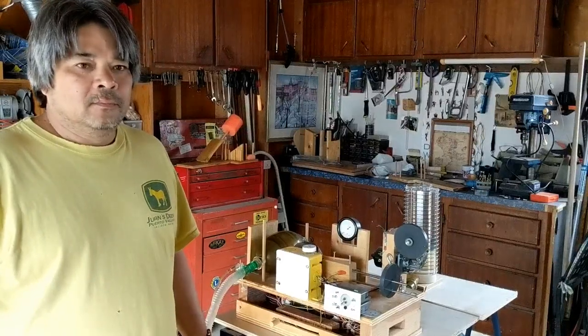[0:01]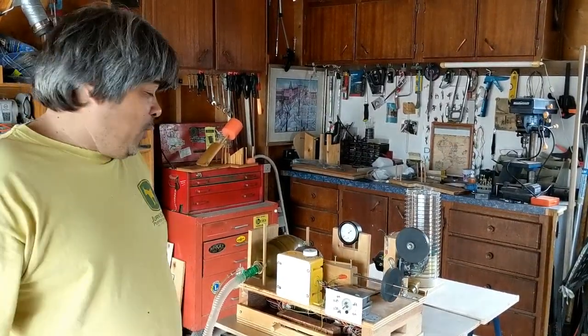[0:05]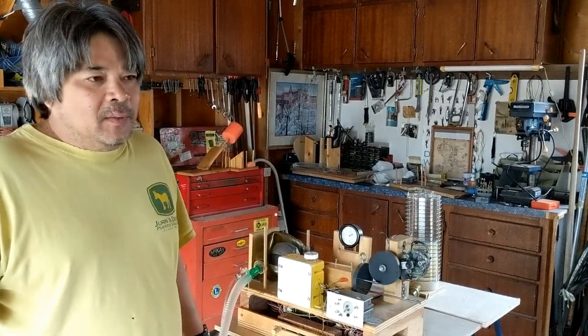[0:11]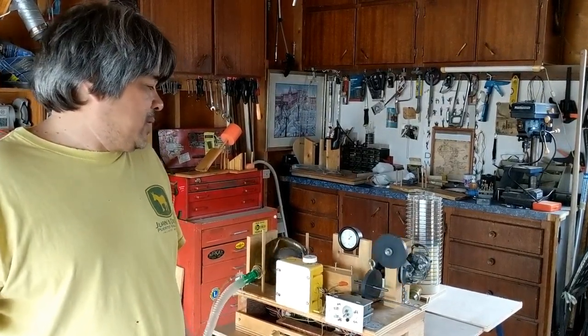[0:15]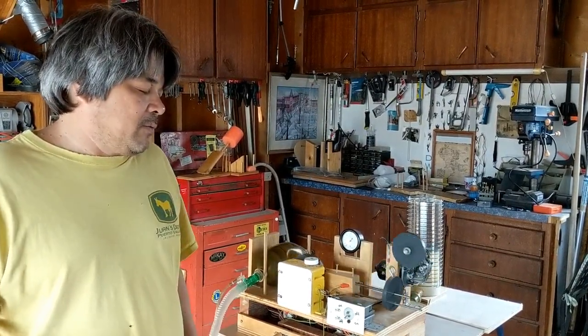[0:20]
So, this is something I built about 20 years ago. I used to be a respiratory therapist, and I had the idea that I wanted to build a cheap ventilator for the third world. So, I developed this. It was designed to be 12 volts. You could run it in a vehicle, or you could run it in a hospital.
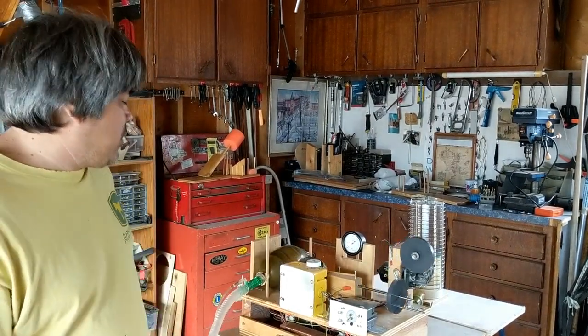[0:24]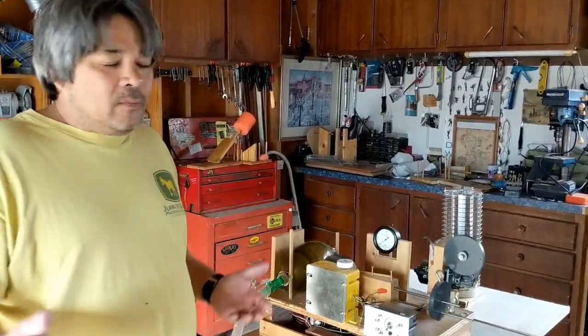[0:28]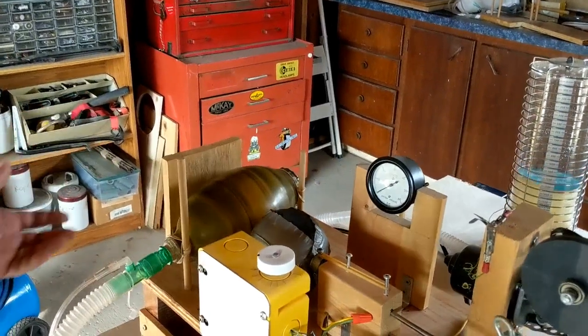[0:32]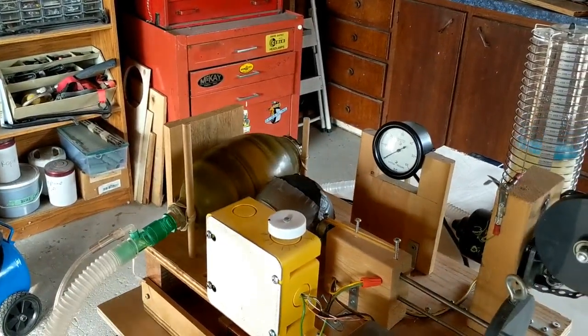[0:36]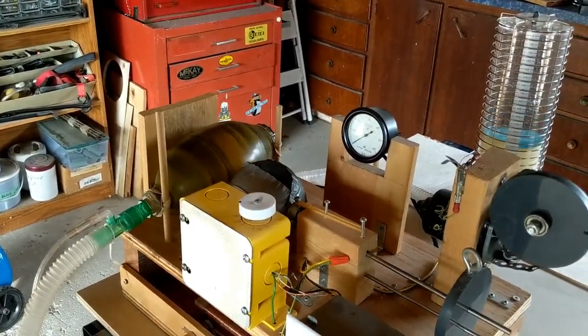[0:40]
It was based on the principle of always having a bagging unit around anyways. Anybody innovative, there's always a bagger around. So I thought, why reinvent the wheel? This has been used for decades and it's proven. So the concept of the bagger is delivering the oxygen in a safe way.
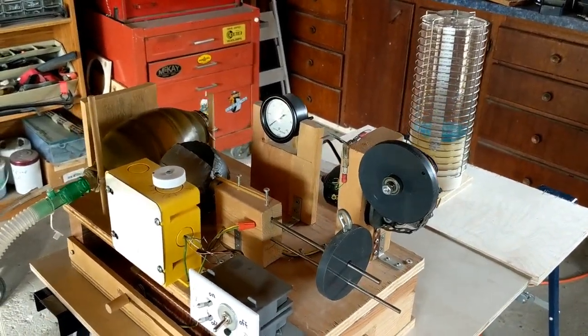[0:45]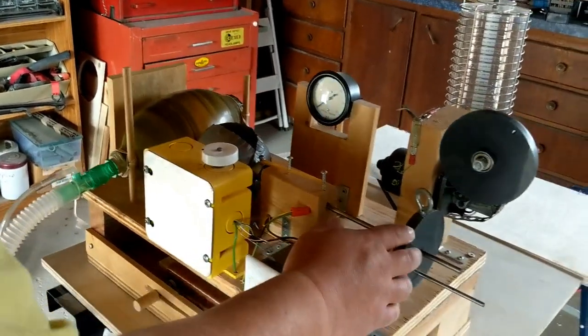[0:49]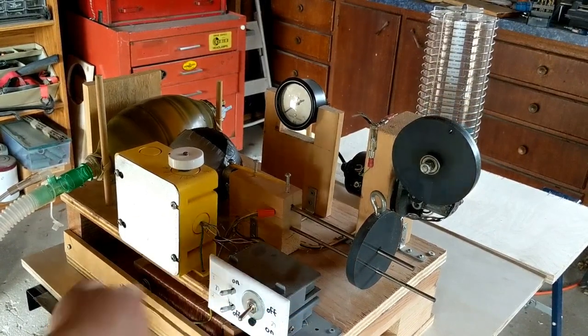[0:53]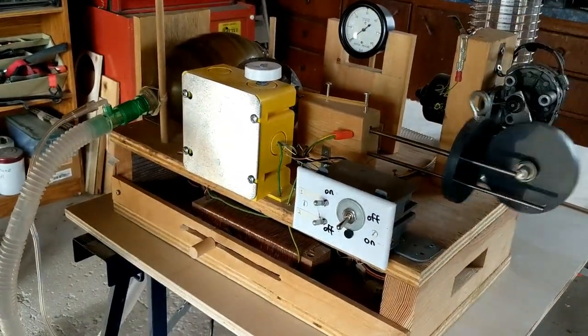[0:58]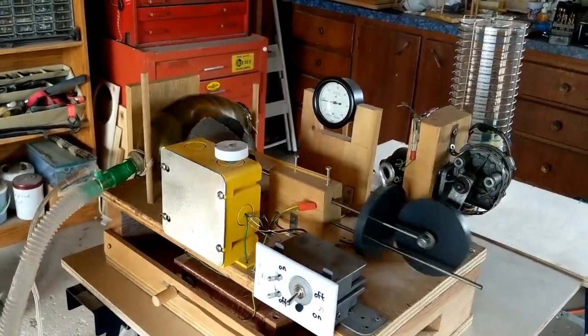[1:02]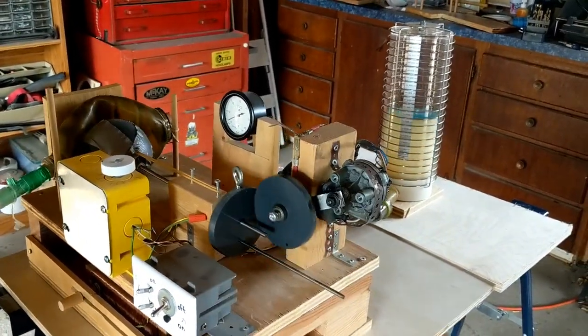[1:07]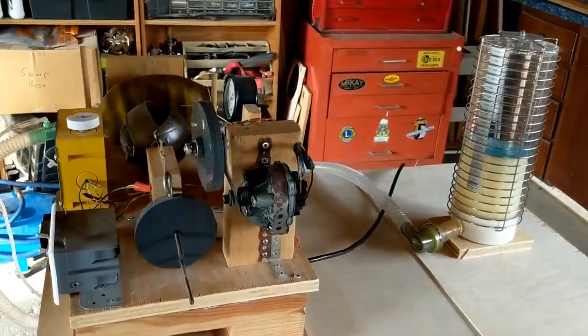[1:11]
I went with that. Now this particular unit uses a 555 timer to control the interval. The tidal volume is controlled by the placement of this disc. And the flow is controlled with this rather primitive rheostat that I had to make. It works okay, but I could never get much more than 650 cc's for a tidal volume out of it. And then my life got busy and I kind of forgot about it. I put it down in the crawl space for 20 years and COVID-19 hit.
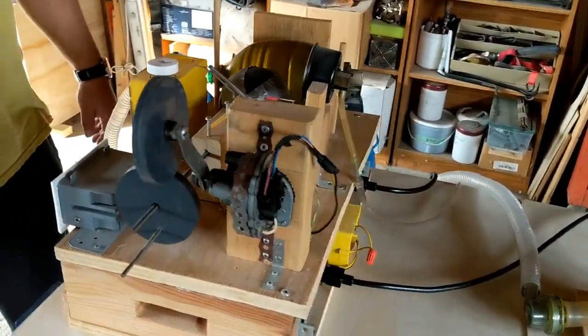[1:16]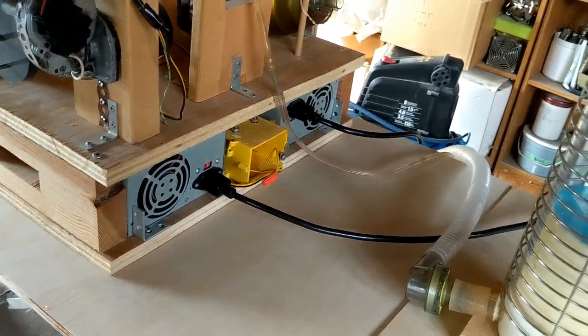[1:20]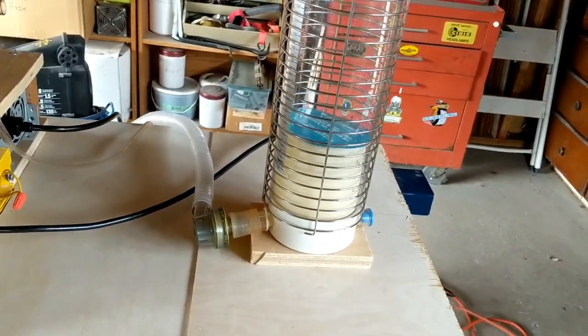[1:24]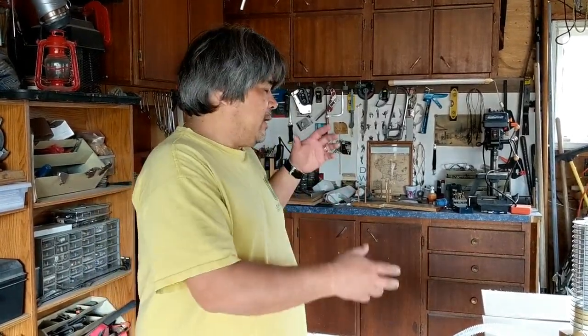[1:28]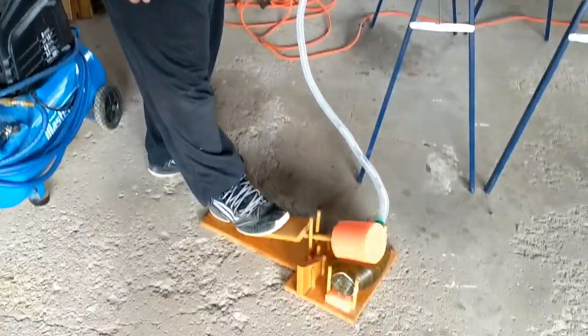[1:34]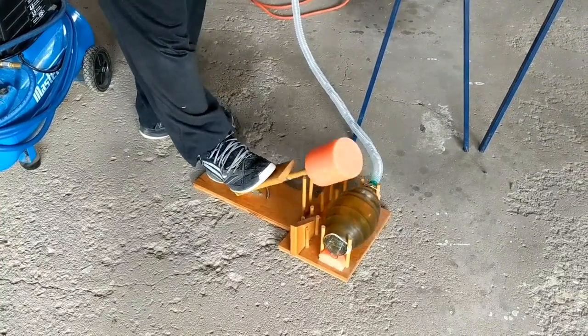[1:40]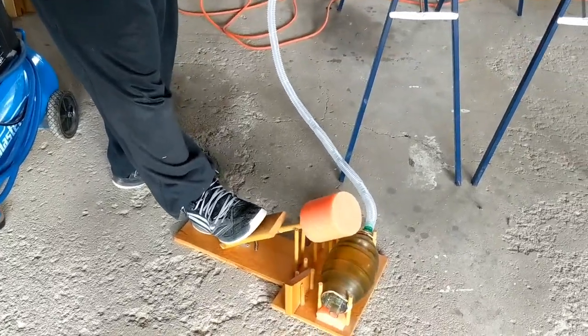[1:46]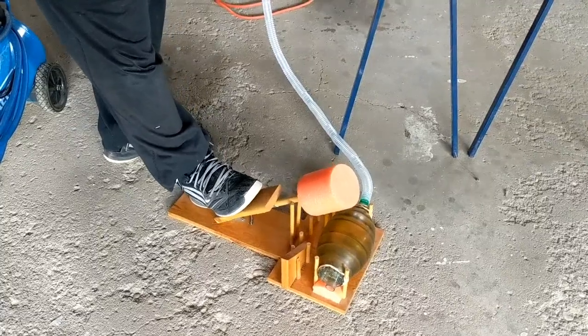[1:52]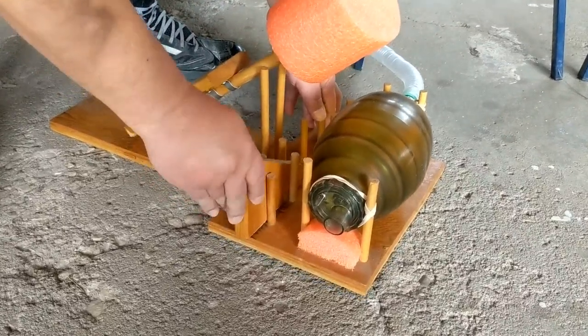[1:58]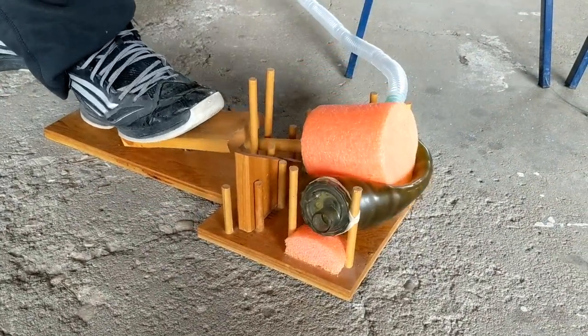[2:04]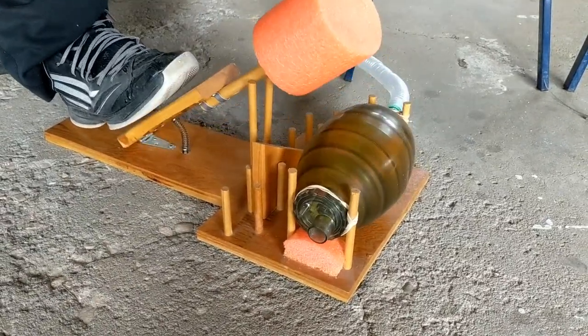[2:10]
In the course of my trying to figure out how to build that, I stumbled across this. Now this was sort of designed to free up your hands and bag a person. I guess meant for ambulances or busy nurses, you know, to change IV fluids, that kind of thing. This might be useful in the present situation because it keeps you away from the head of the bed and you can still bag. With this wedge, you can titrate with a Wright's respirometer the tidal volume you're giving. I've got measurements down there, so you can control the tidal volume while bagging. It's kind of nifty.
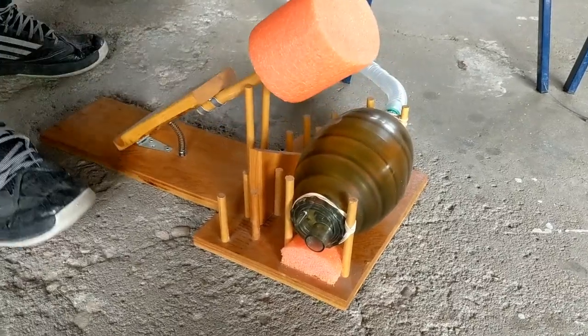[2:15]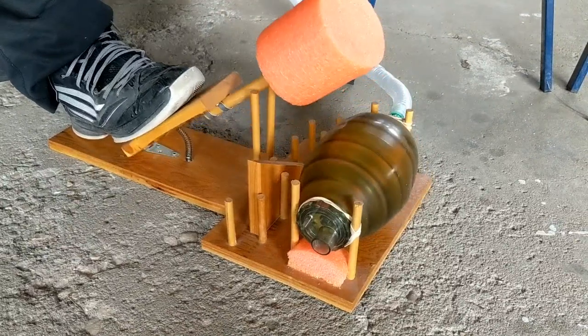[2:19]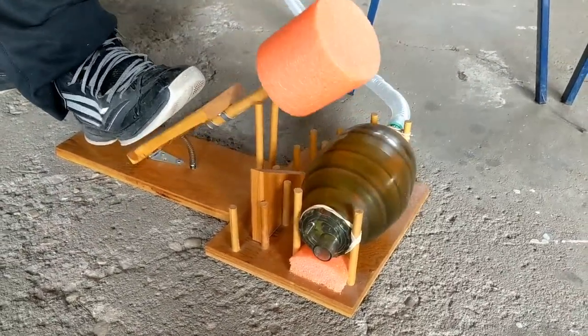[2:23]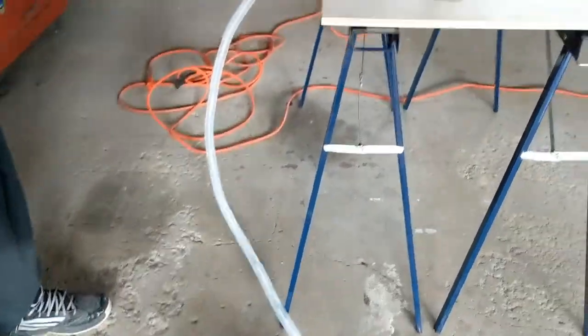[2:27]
Free up your hands. And get about 900 cc's out of this pool noodle head. It's a pool noodle cross section.
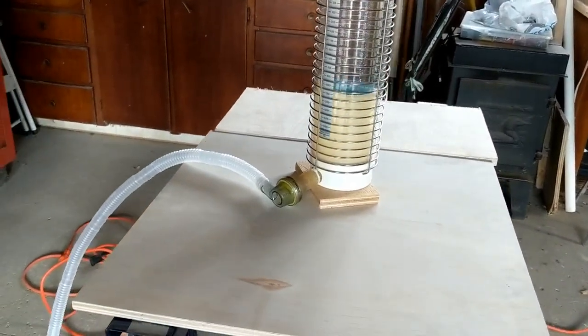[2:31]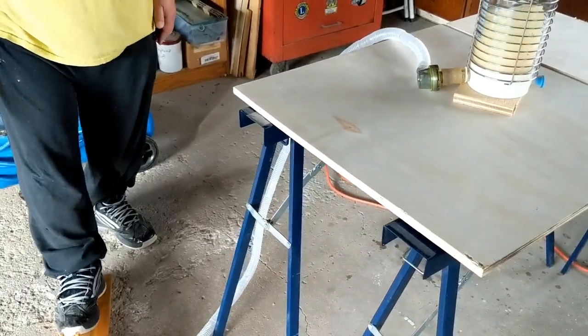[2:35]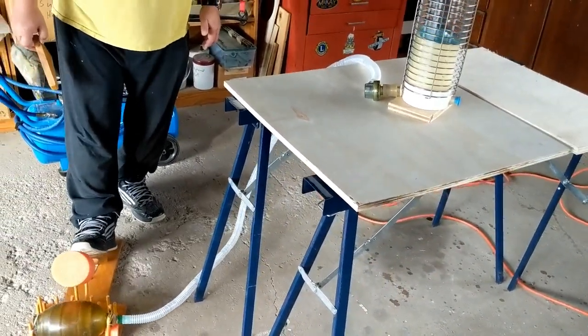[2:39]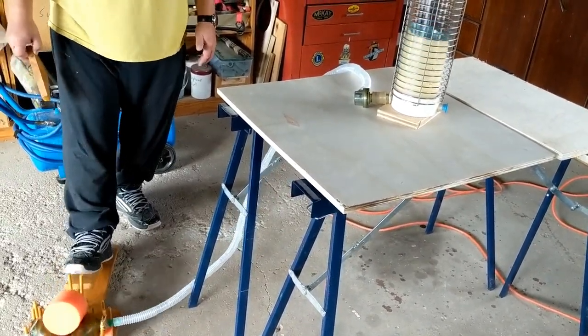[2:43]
Later, when I started reading stories about how they're running out of ventilators in Italy and they're having to triage patients and make rather horrible decisions that we've never had to make in this country, I started thinking, well, if things get bad enough, you know, this is not medical grade. It's not made by Puritan Bennett or Engstrom or any of those guys, but it might do in a pinch.
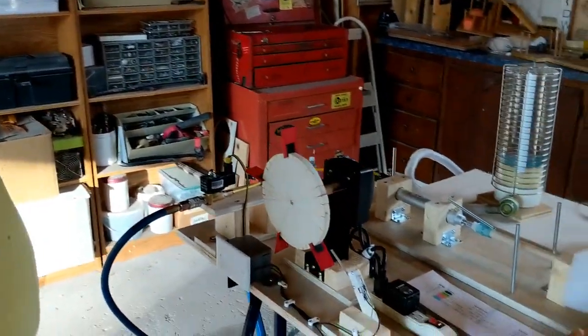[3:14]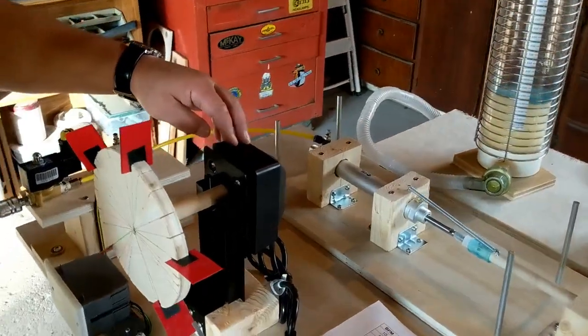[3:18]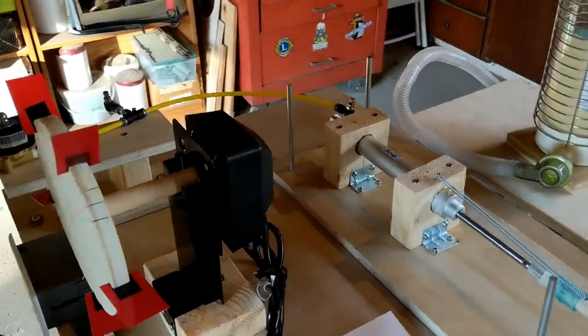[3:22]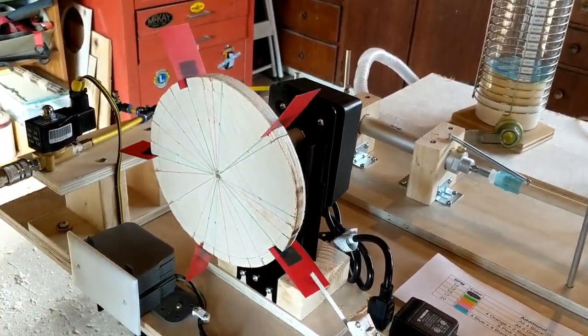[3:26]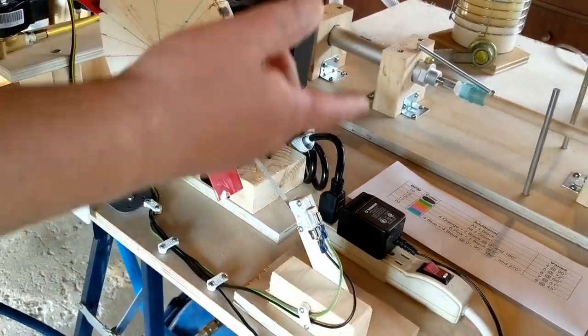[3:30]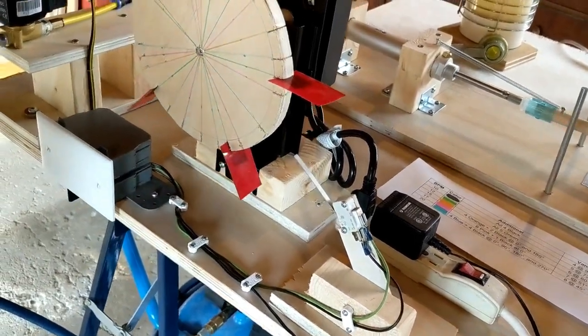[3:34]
So, basically, the heart of this thing is actually a barbecue rotisserie motor used as a timer. This is from Princess Auto. It's $25. It does about 2 RPM. And from that, we developed the idea of having the wheel with slots and these little fins to actuate a switch.
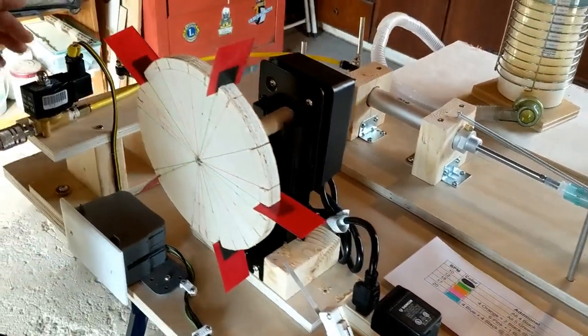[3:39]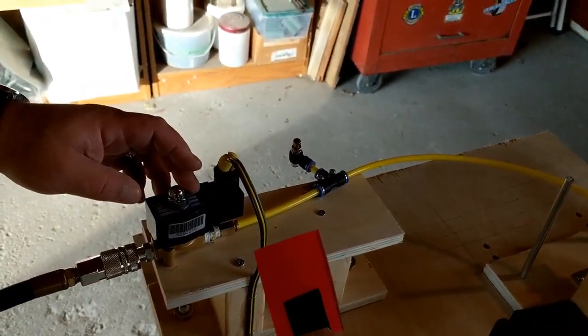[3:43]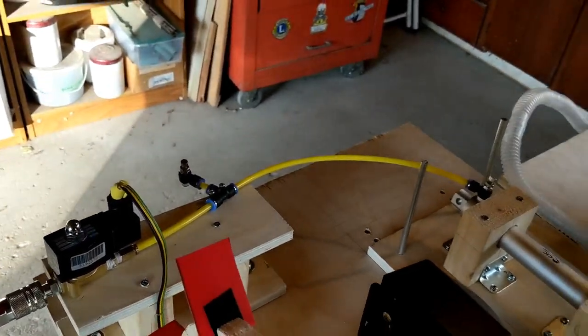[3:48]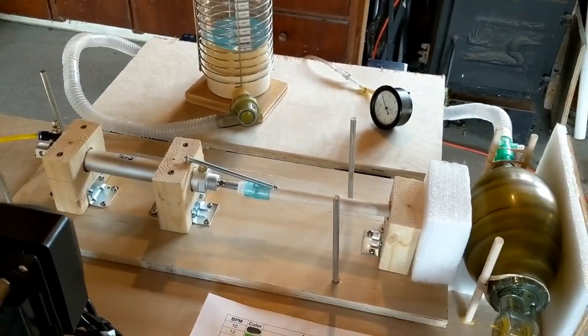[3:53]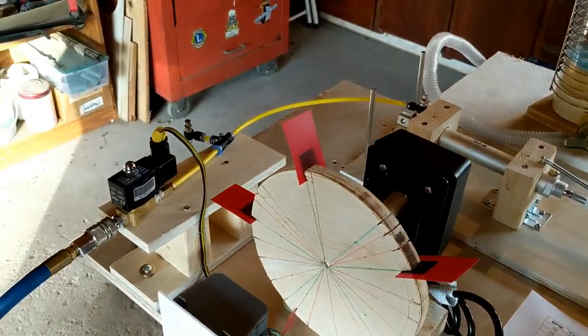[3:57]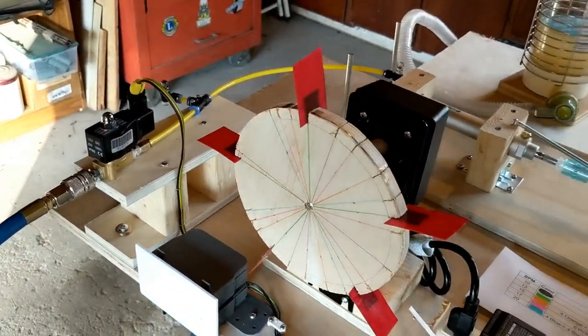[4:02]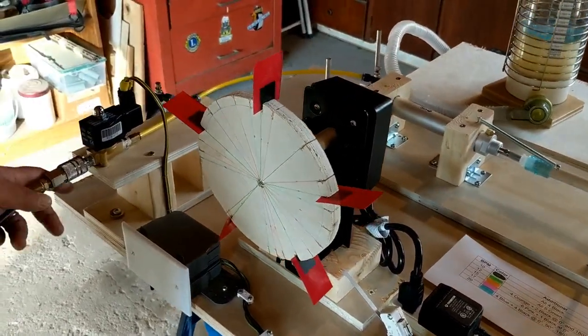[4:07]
Now, the other heart of this system is this 12-volt pneumatic solenoid. Basically, the idea behind this whole ventilator is I'm no longer constrained by electrical needs. All hospital rooms have oxygen lines, air lines, suction. So if I can utilize the 50 PSI air line in a hospital room, I can power this unit. So we have a 12-volt solenoid here hooked up to my compressor, which is set at 50 PSI.
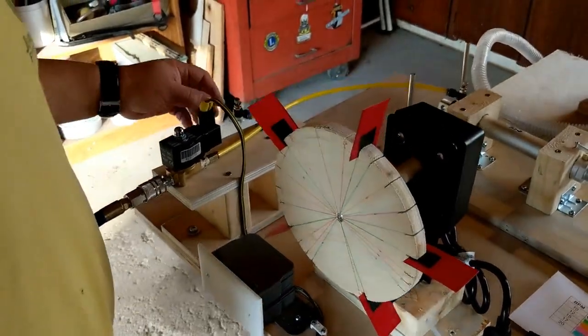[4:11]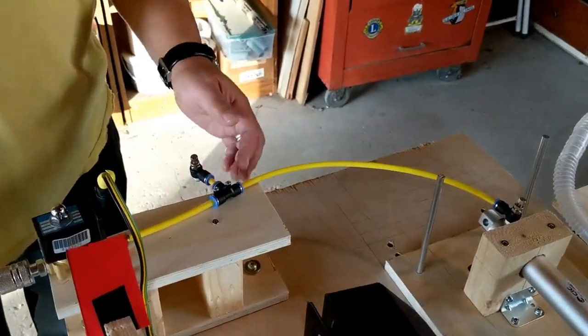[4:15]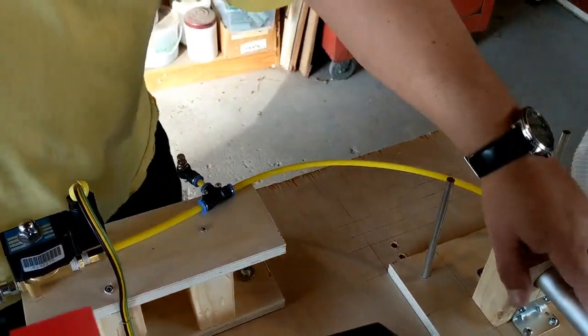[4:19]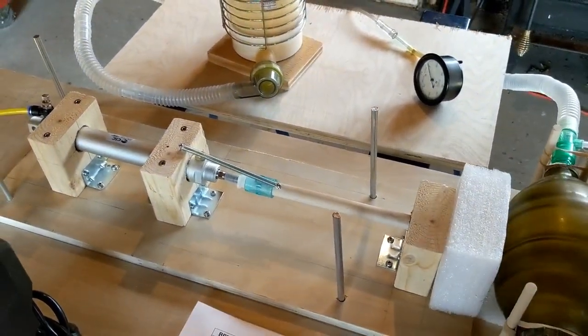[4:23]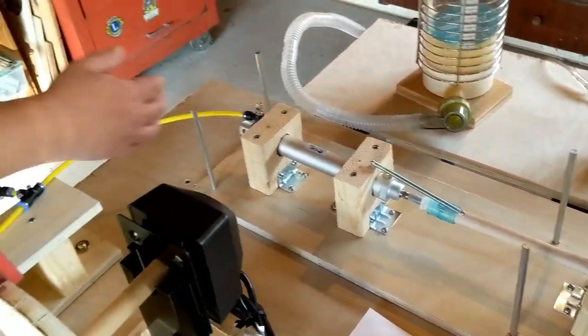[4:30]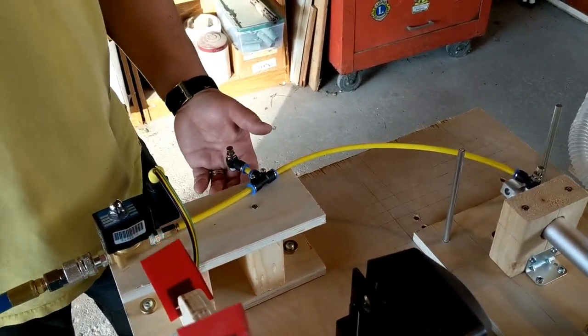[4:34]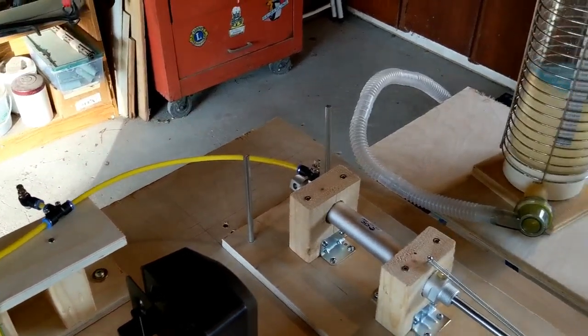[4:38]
Through some 1/8 tubing here, and this is a T going to a little control valve. Now, this thing here is a single-action actuator. It's basically a pneumatic cylinder. It has a spring inside that causes it to return. But because it's coming back, you need a way to vent the gases inside on the return stroke. So that's what this little T is. It also vents during inspiration, but not enough to cause a problem with the compression stroke.
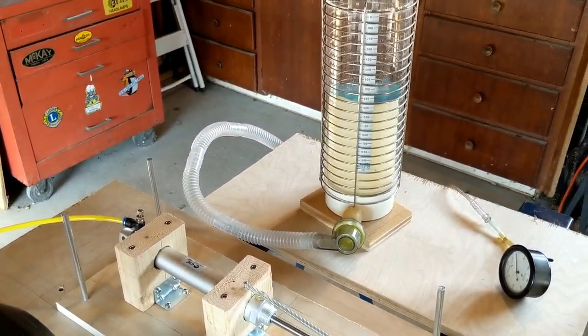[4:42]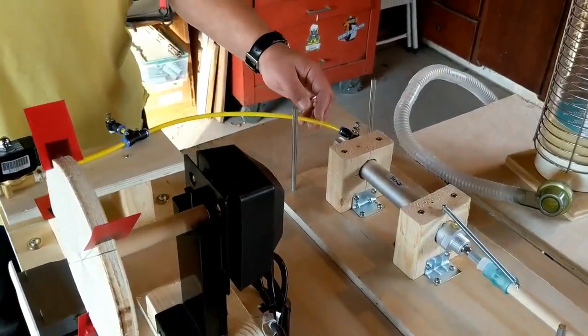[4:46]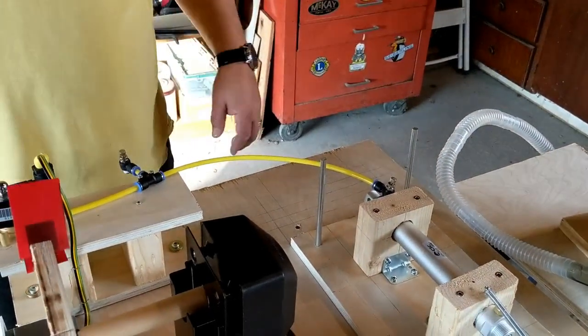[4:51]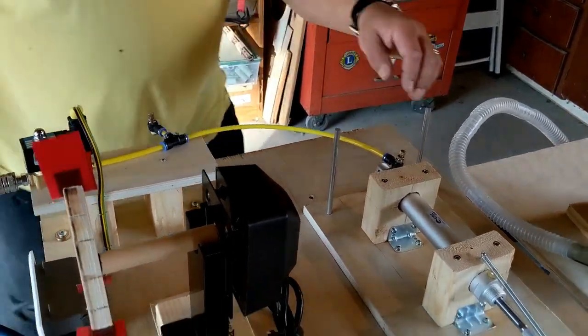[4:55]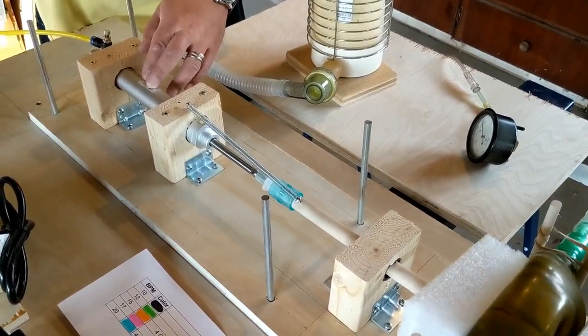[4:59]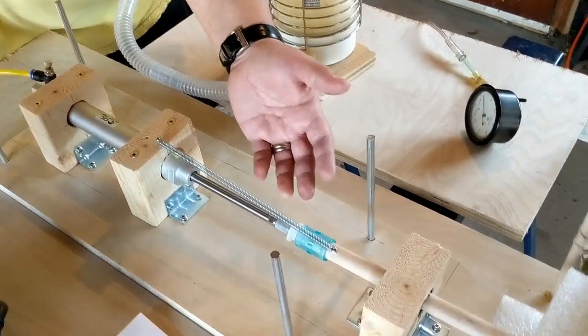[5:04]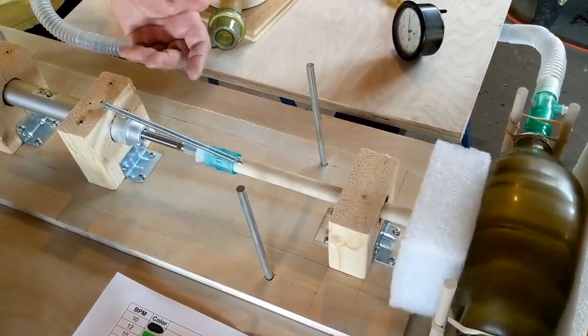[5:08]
One of the interesting things I discovered when building this was I originally placed the T back up here to make it look better, and all the gases went out and there was no compression stroke, so I moved it back here and it seems to work okay. This is the single action actuator from Princess Auto. I think it was like $32. I had to use an endotracheal connector because I'm not a machinist and I didn't have anything to connect to this dowel very easily.
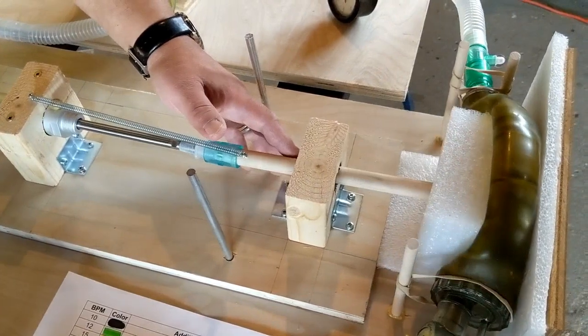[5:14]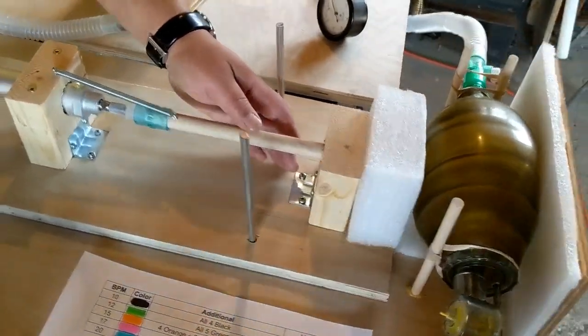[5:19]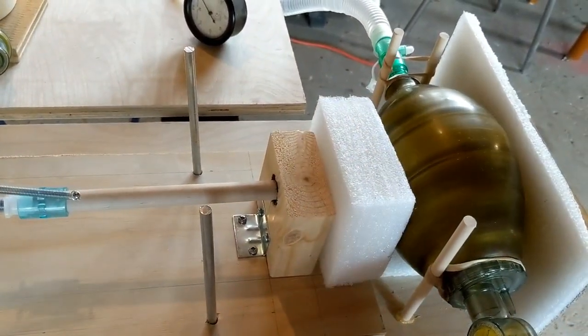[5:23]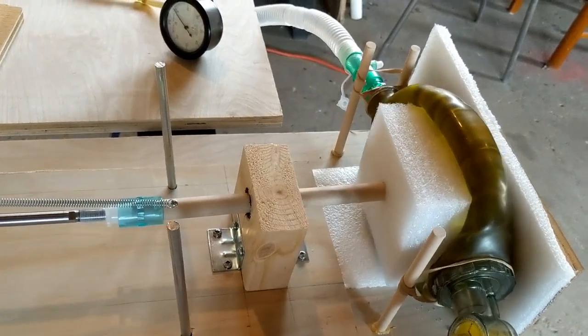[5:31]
Basically it goes through a bearing of black pipe. This is a 5/8 dowel. And this is polyethylene foam that typically people throw away as garbage. But it's kind of tough stuff, and you can weld it together and do amazing things with it.
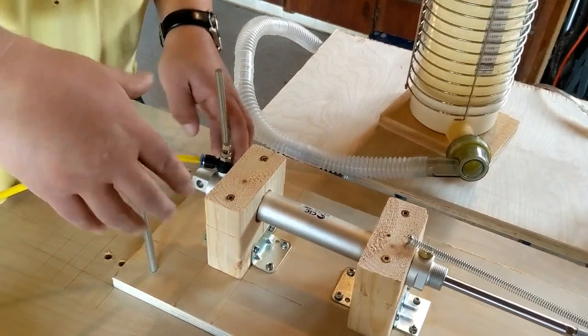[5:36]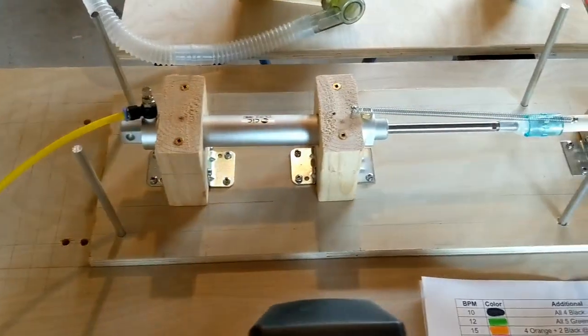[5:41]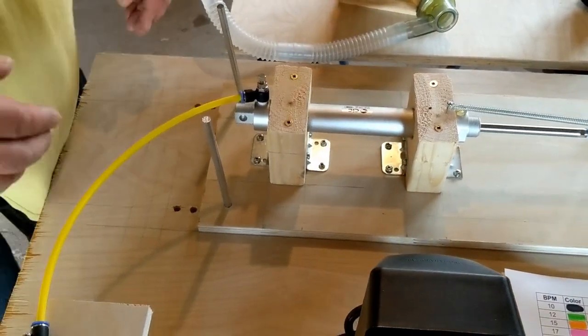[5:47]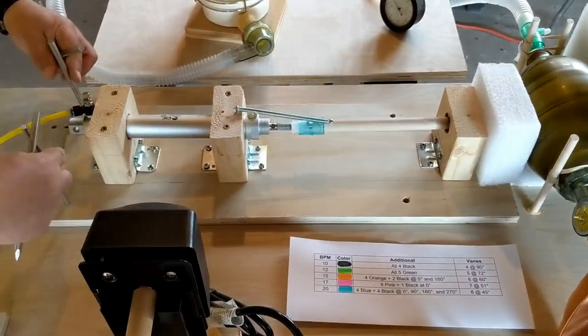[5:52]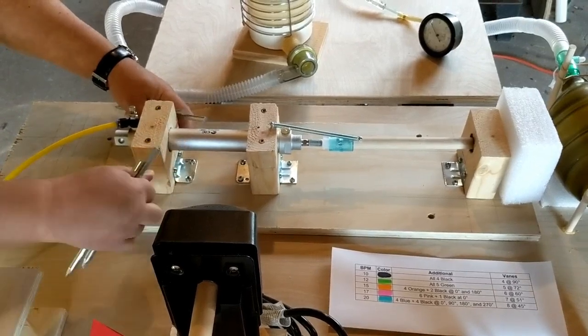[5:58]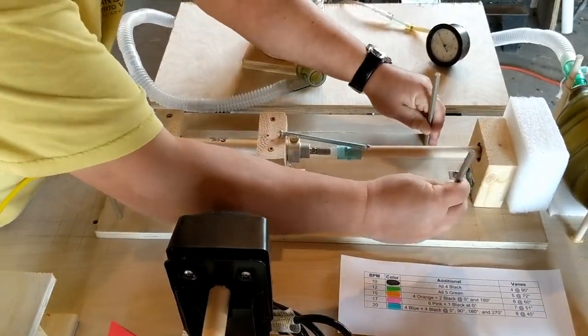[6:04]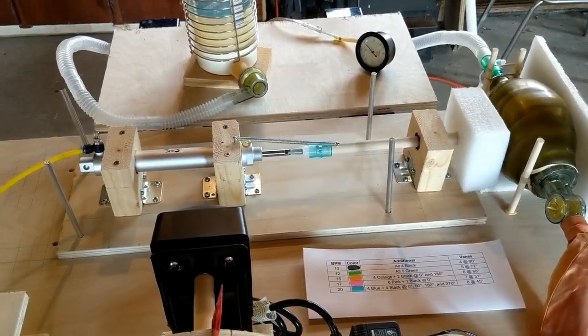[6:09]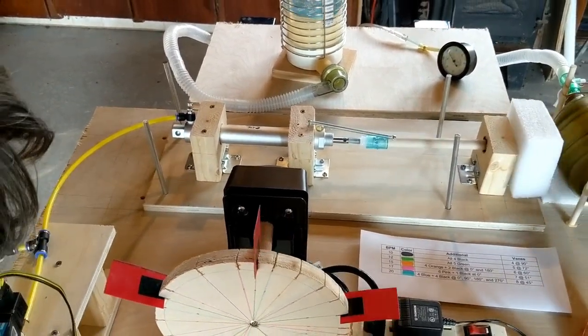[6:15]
Now, this platform it's built on is designed to step back to reduce tidal volume. At the max setting where it presently is, I can get about 800 cc's. If I want to reduce it, shut off the rotisserie motor here, pull these pins. I've got measurements set here. Put the pins back in and turn it back on. And then we get a reduced tidal volume. I don't know, what is that? Oh, what, 700?
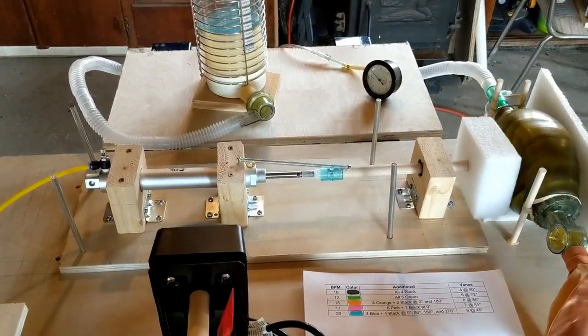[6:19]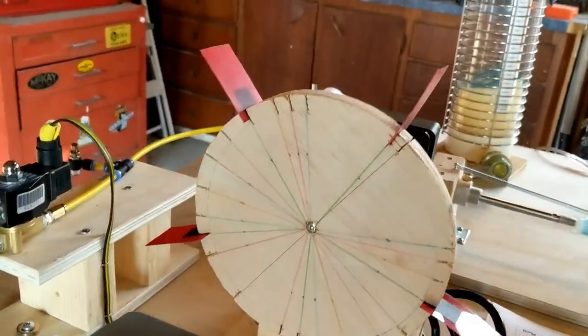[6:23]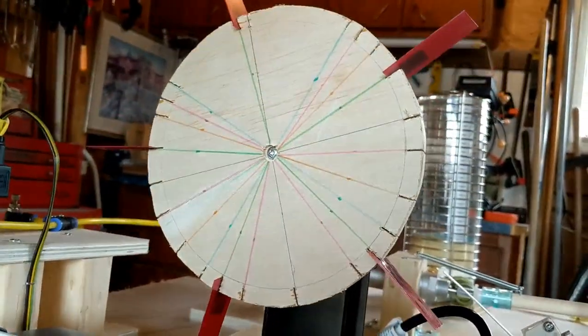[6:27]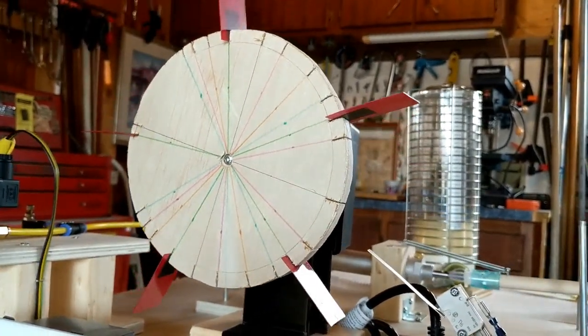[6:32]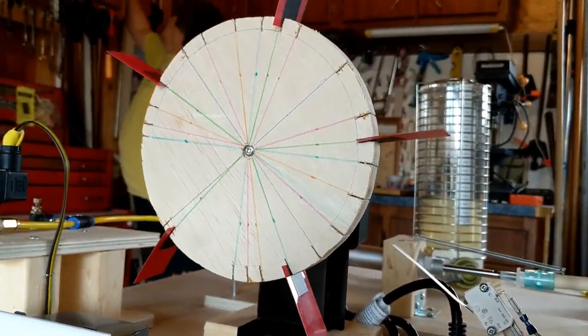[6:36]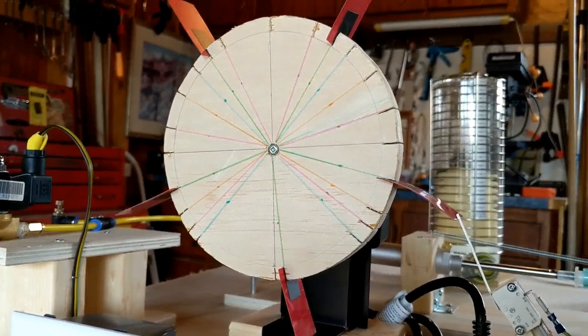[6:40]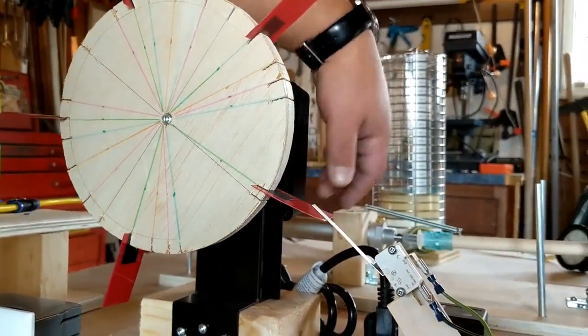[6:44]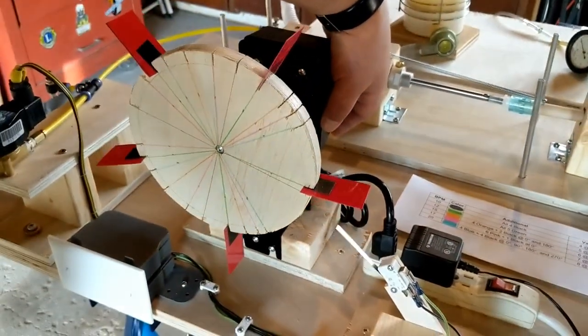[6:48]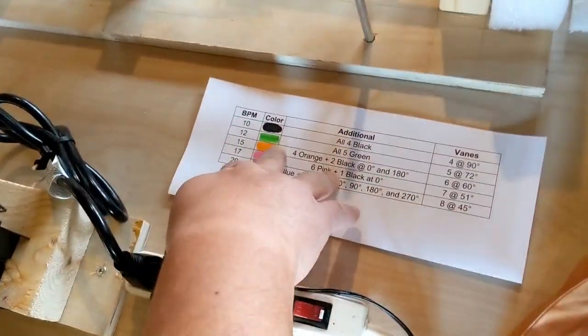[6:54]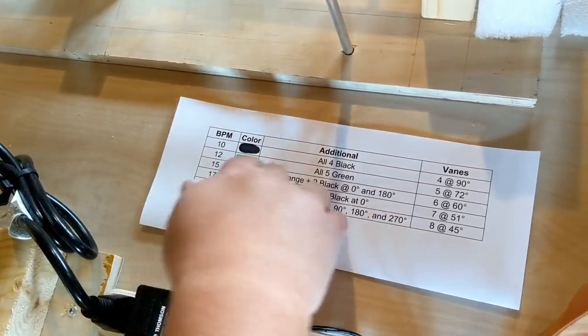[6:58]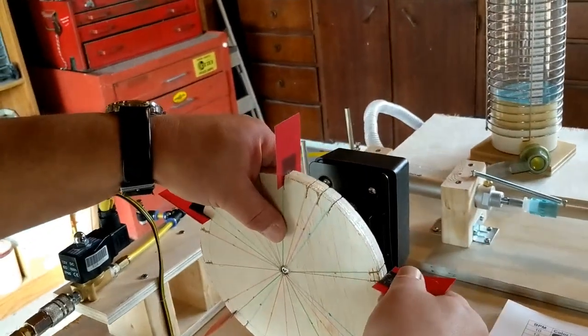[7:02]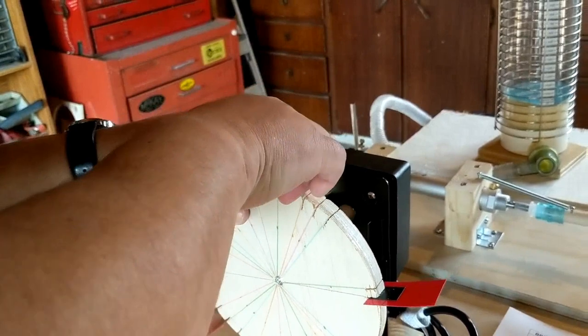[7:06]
Now, the wheel has different colors for different breaths per minute. These fins are cut from the lid of a Tim Hortons can, and the slots I cut with my little booster saw. So it's a very thin cut. And the idea is, if you want to change the rate, let it do that final breath, and you just move the fins. So currently I'm at a rate of 12 breaths a minute. If I want to go down to 10, I go to the black, or basically the cardinal points of the compass. Take one out.
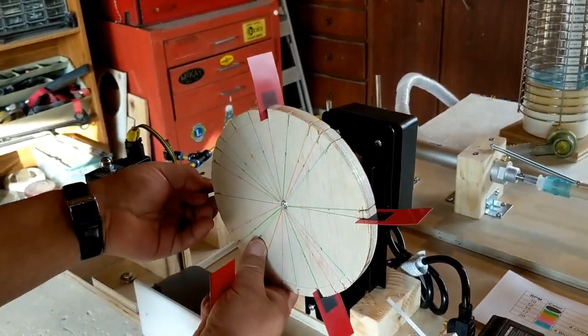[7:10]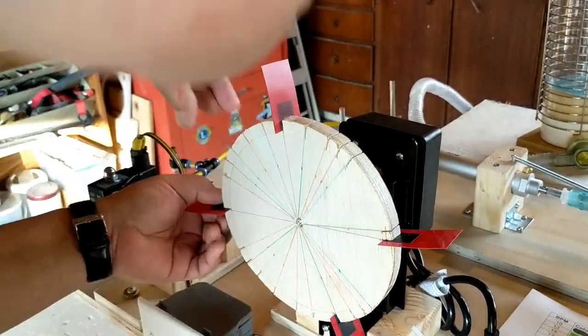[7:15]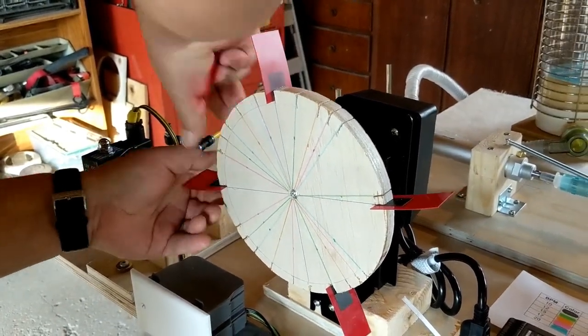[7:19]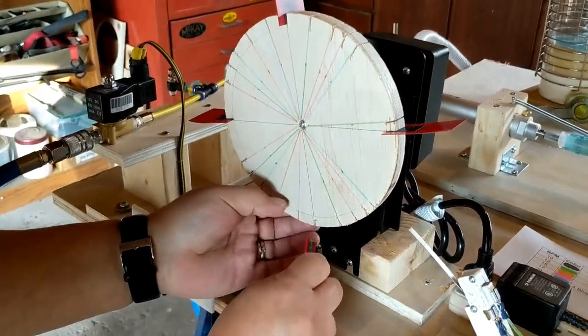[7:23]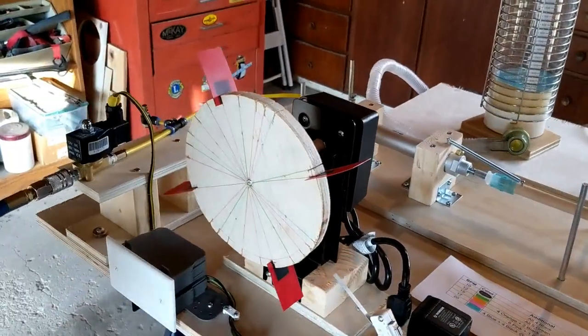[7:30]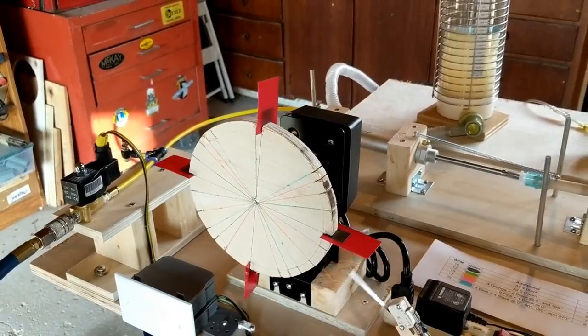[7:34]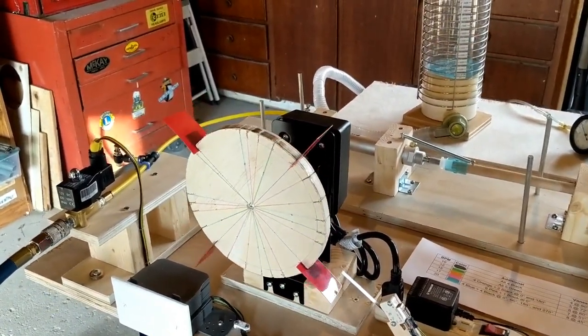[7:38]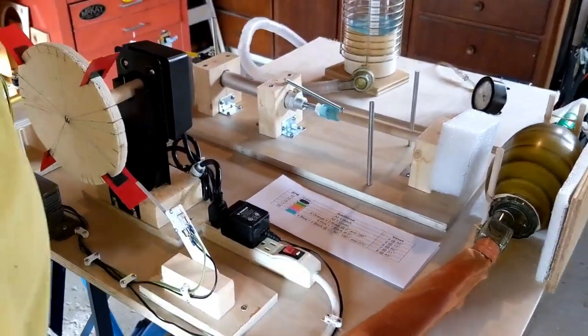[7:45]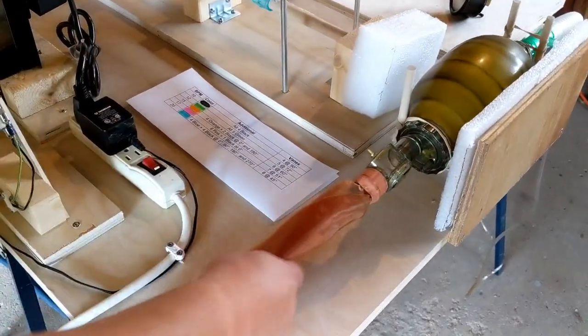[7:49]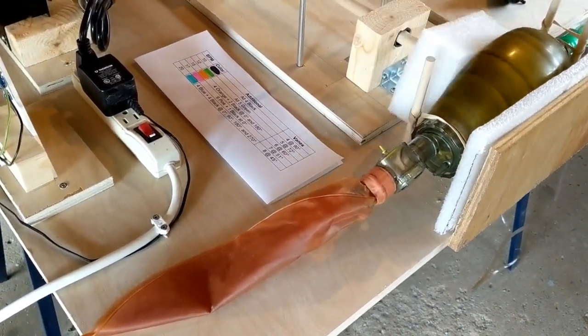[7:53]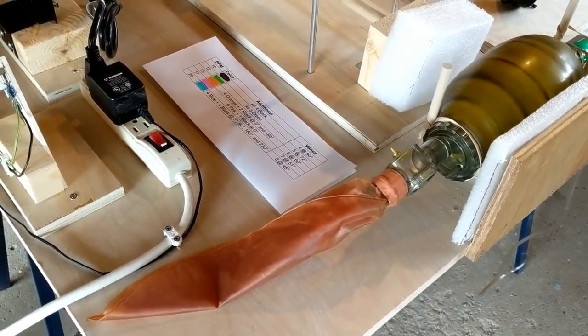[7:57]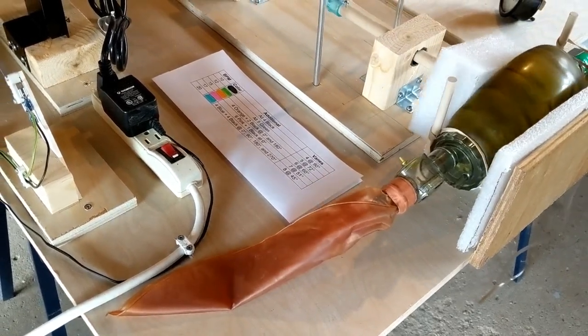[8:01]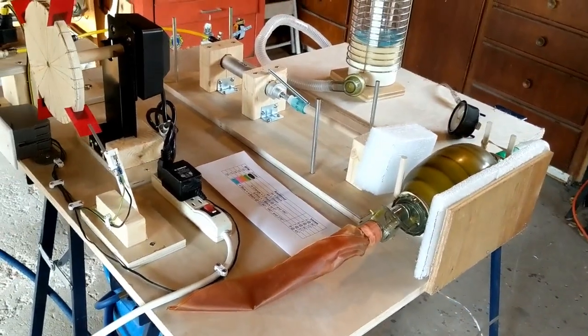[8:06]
Now, how do you control the FiO2 with this setup? Basically, we would have a Y connector feeding into the Laerdal bagger, one feeding to air, one feeding to oxygen. Using a basic algebraic calculation, you can determine the FiO2 by multiplying the airflow times 0.21, adding that number to the oxygen flow, and dividing it all by the total flow. That will give you the FiO2.
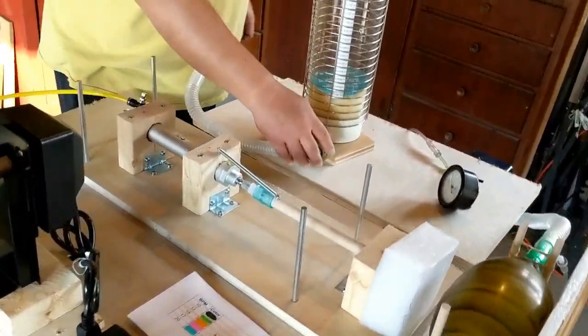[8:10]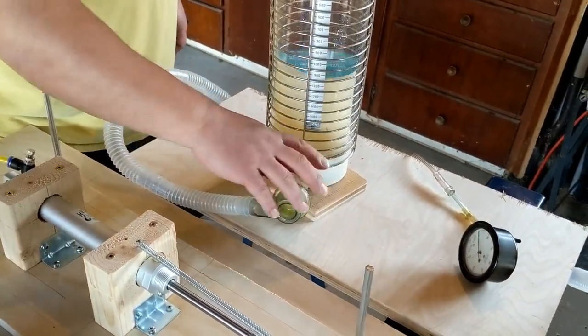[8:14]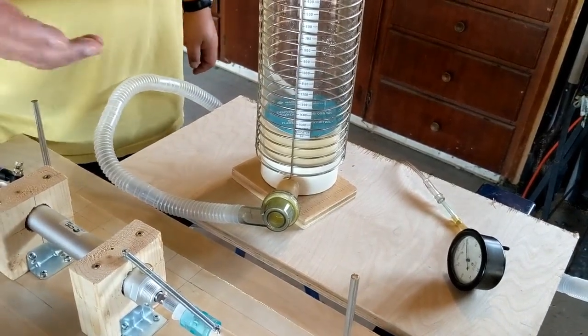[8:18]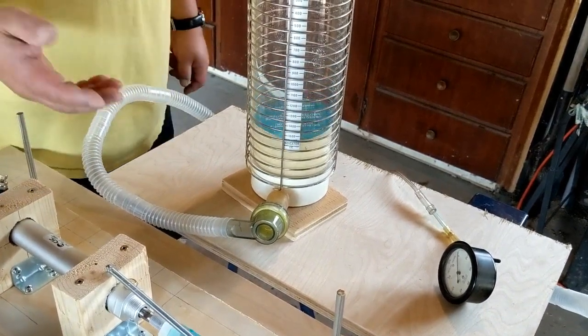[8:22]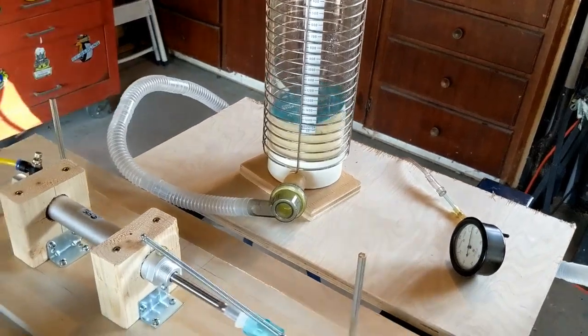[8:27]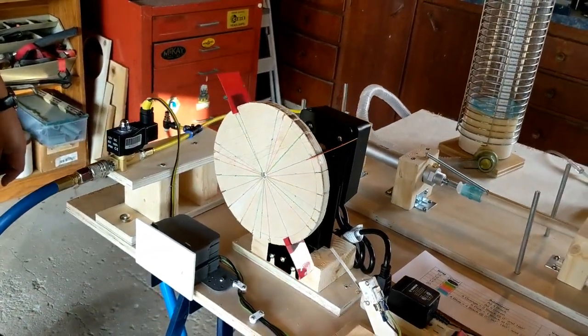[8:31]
Now for PEEP, I don't have one, but Laerdal does manufacture a PEEP valve attachment that goes over the exhalation valve over here. If you're running out of PEEP valves, you can use this tubing, run it into a bucket of water, 10 centimeters deep, 15, 5, whatever you want. And that's about it.
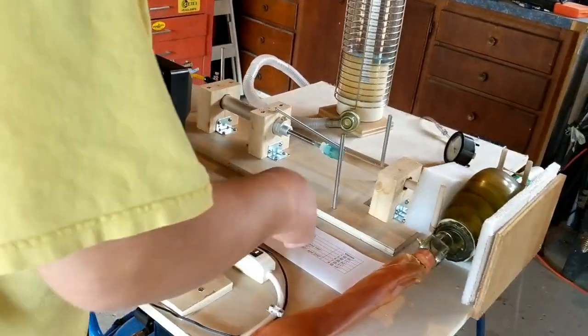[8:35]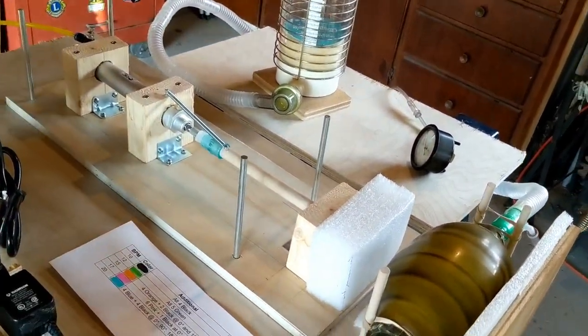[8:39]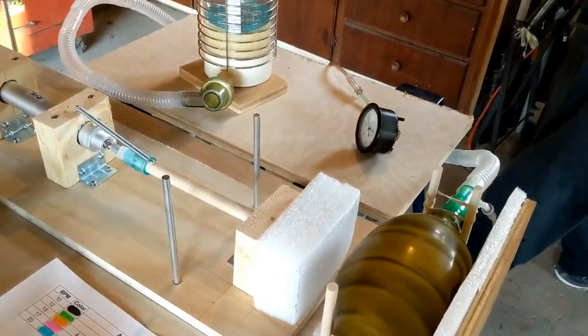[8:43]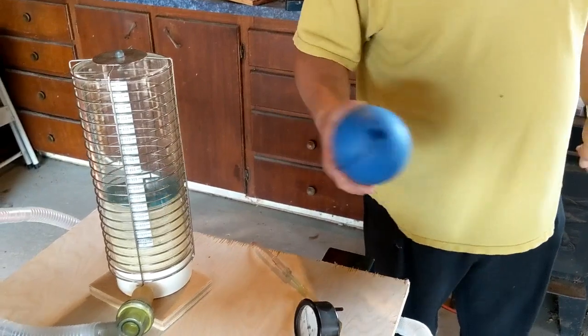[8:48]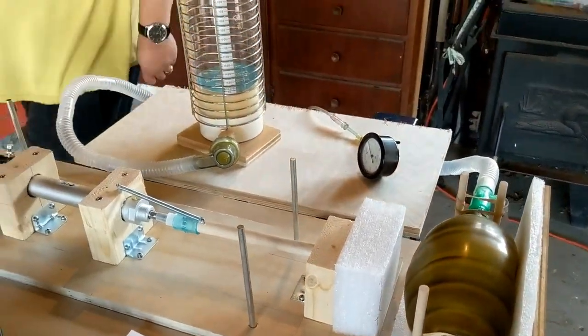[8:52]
Oh yeah, one other thing. I played with various shapes for this head, and this is about the best I could come up with. I tried using this ball, but it only got about 700 cc's. So the square shape seems to work a little bit better.
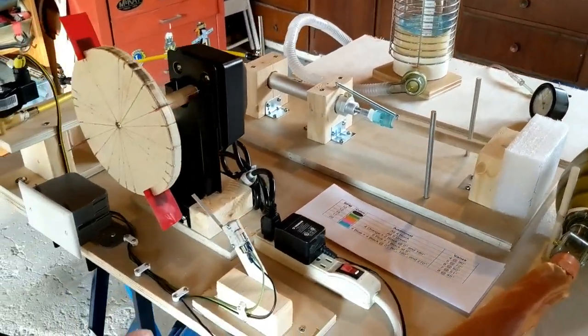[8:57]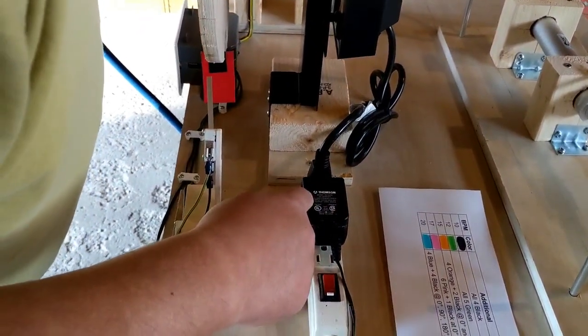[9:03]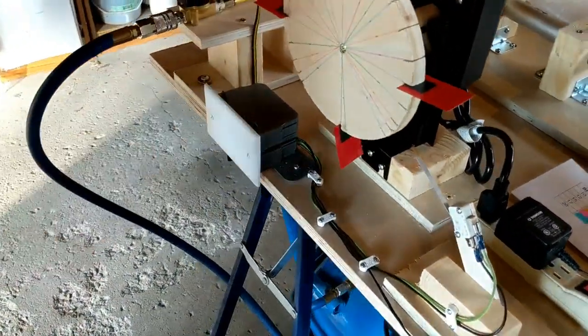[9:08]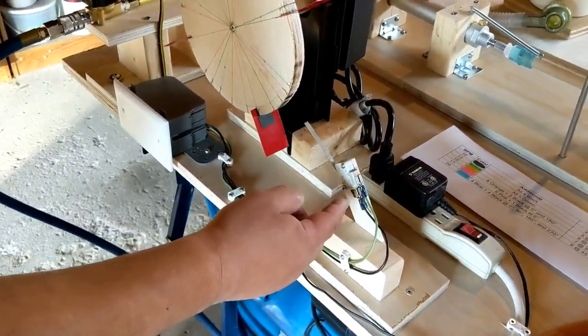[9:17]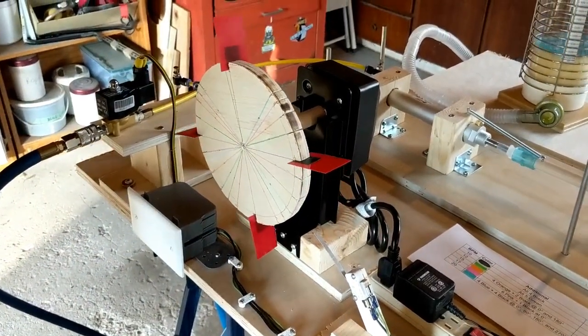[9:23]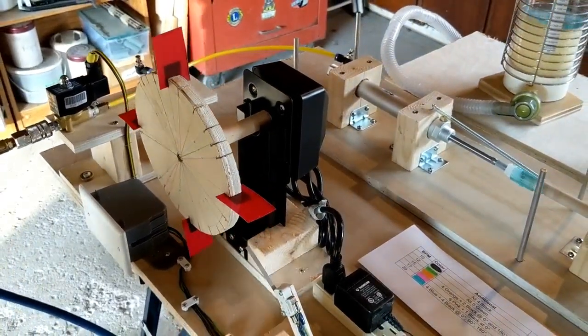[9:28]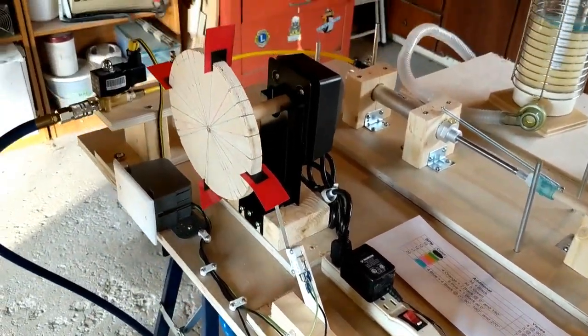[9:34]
The wiring for this system is very basic. So what we have here is a 12 volt adapter. I think it's 200 milliamps. Yeah, 200 milliamps. The positive and negative are in here. The positive runs to this yellow wire on one side of the solenoid. The ground from here runs to this switch. And then when the switch closes, it completes the circuit, current flows through the solenoid and opens it up. And yeah, this is basically the AC connector for the rotisserie motor. And that's about it.